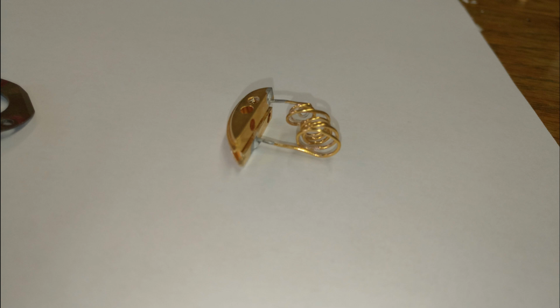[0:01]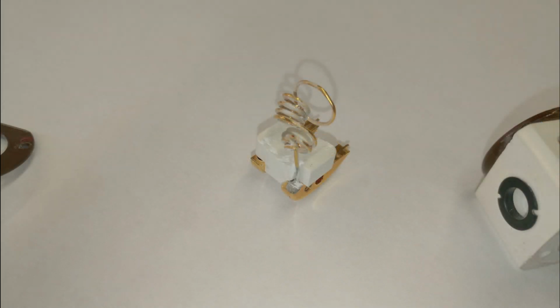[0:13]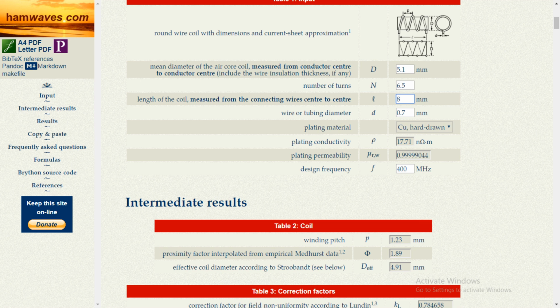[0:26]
The exploding rotor tangled the radio frequency solenoid coil. To make a new one, a lot of questions emerged. First, how the original looked like. Second, what wire was used in the original coil. Then, of course, I had to figure out how to make the new coil and how to solder it exactly in the rotor spinning axis.
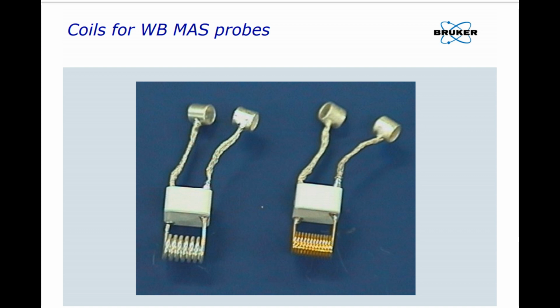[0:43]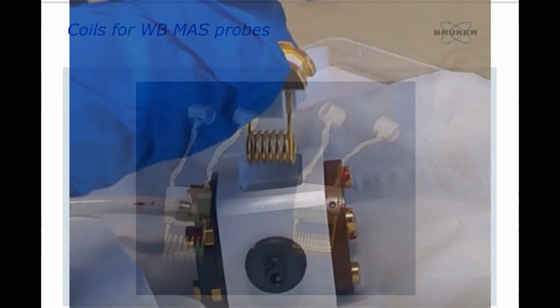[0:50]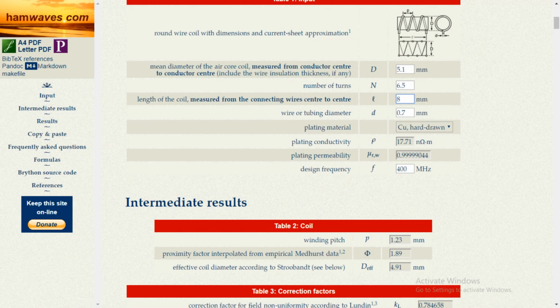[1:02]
The original coil is an LC inductor, and as such the inductance is determined by the coil shape. These include the coil diameter, the wire thickness, the space between windings, the coil length and the coil material. I could find pictures of the original coil in the Bruker solid system flyer. Another picture was available in a video on YouTube showing the stator and coil replacement of the exact same probe head. It has 6.5 windings and it is as long as the soldering tabs.
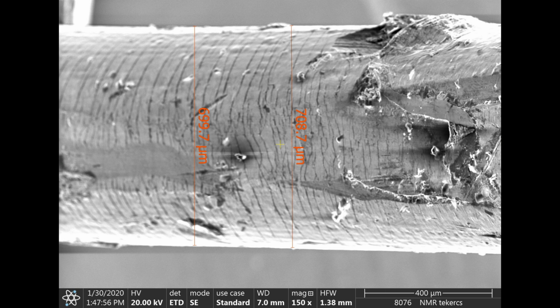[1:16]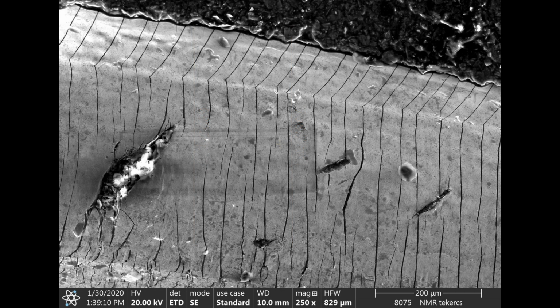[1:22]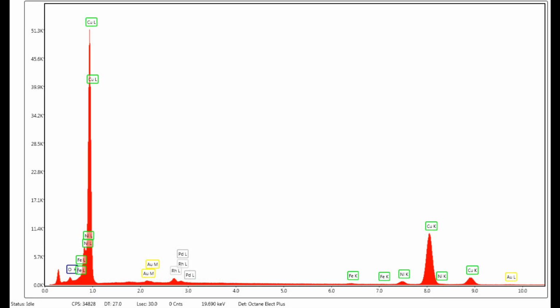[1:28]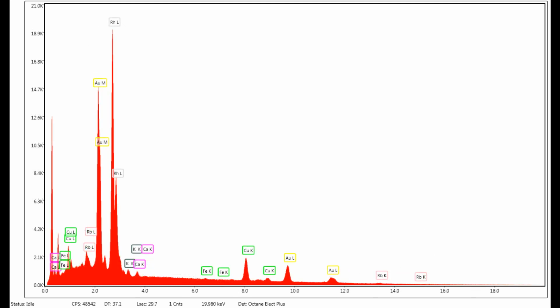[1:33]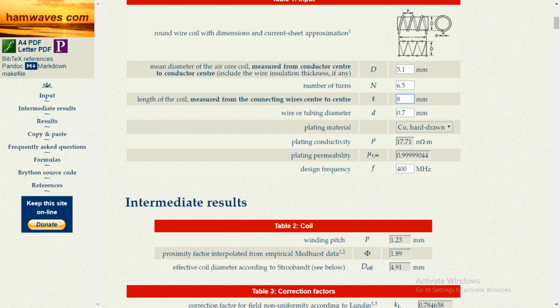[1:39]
The space between the rotor and coil internal should be minimal, but according to some papers, it is between 0.2 mm and 0.4 mm. The original coil thickness was 0.7 mm. Electron microscopic analysis showed that the coil is pure copper with gold and rhodium coating. I am really grateful to Dr. Krzysztof Kovac from the Institute of Materials Engineering at our university for these measurements. With the acquired information, I was looking for a coil parameter calculator to determine the space between windings, which turned out to be 0.5 mm.
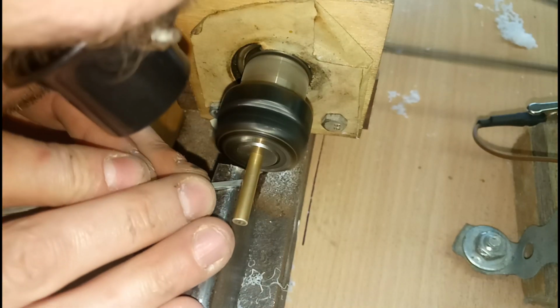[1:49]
A tool was made for the winding job. On my self-made lathe, the brass rod was turned down to 4.4 mm thickness.
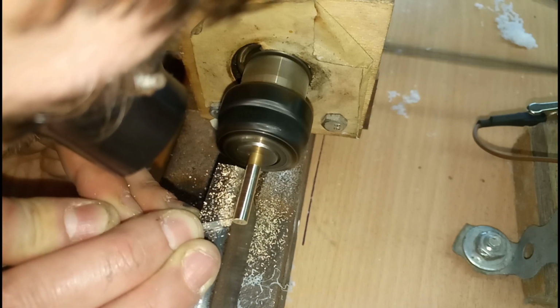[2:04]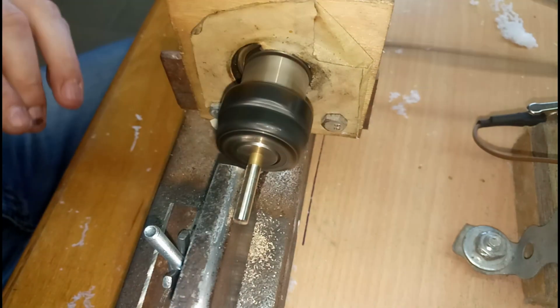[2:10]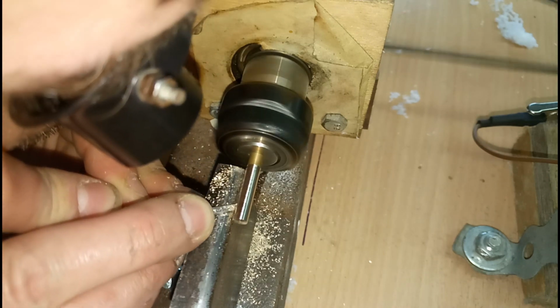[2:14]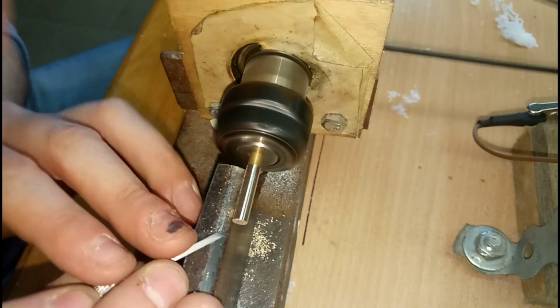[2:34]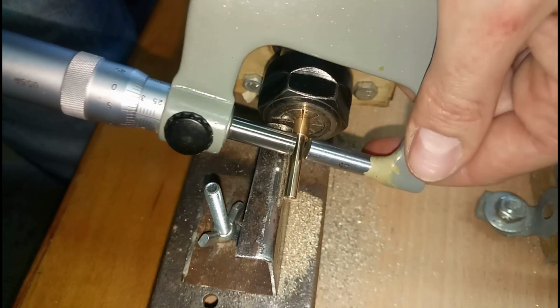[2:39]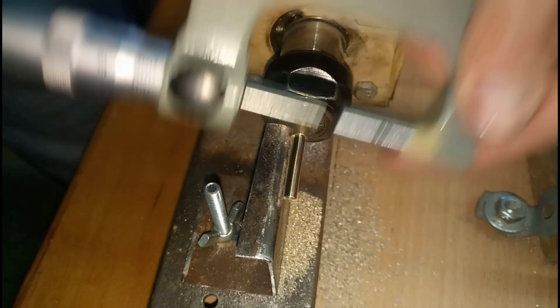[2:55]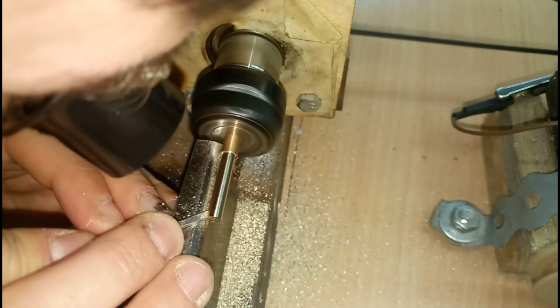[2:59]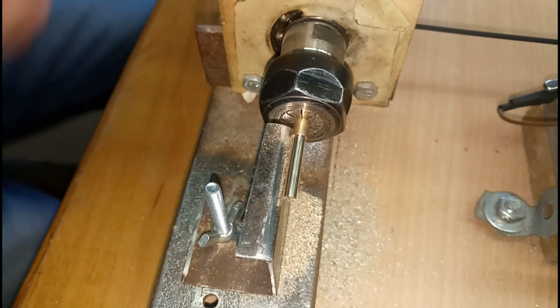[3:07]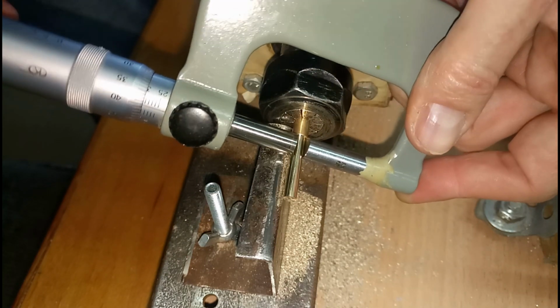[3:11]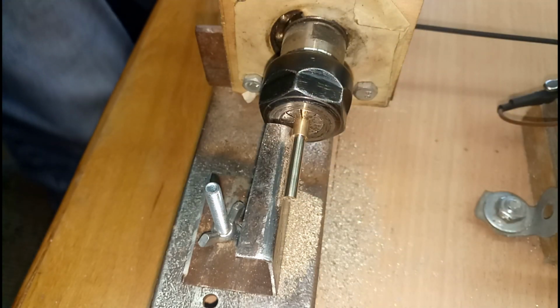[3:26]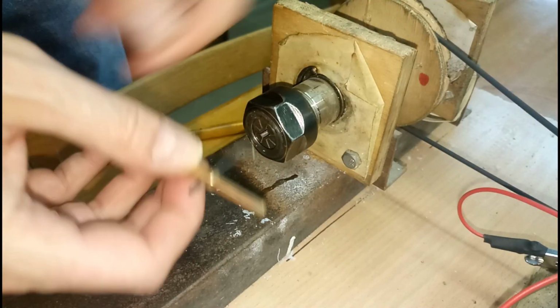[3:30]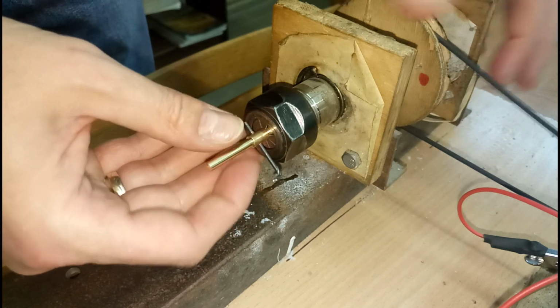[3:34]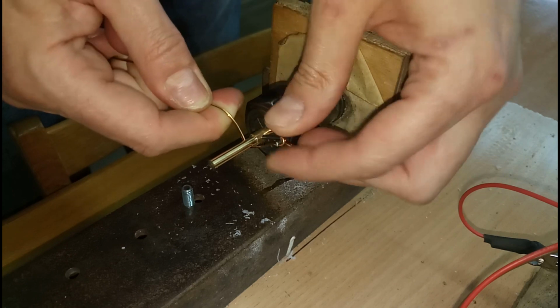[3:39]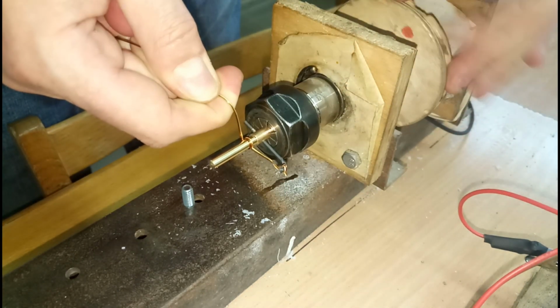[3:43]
A steel piece was inserted in the base, serving as a hook for the wires. Then I was just turning the tool in the lathe by hand while holding both wires. This way the thin wire made the desired 0.5 mm spacing.
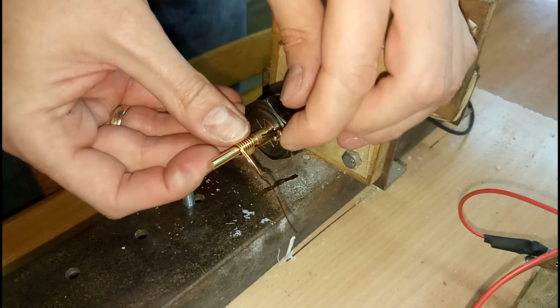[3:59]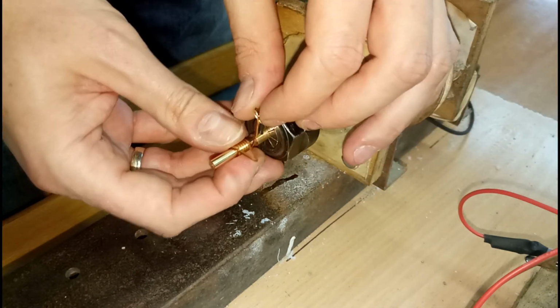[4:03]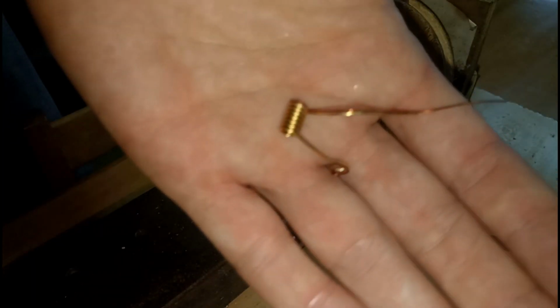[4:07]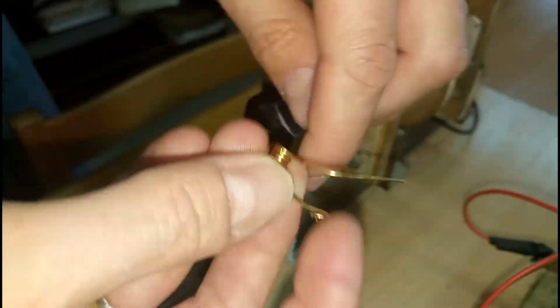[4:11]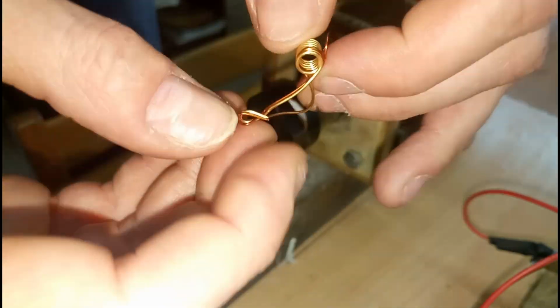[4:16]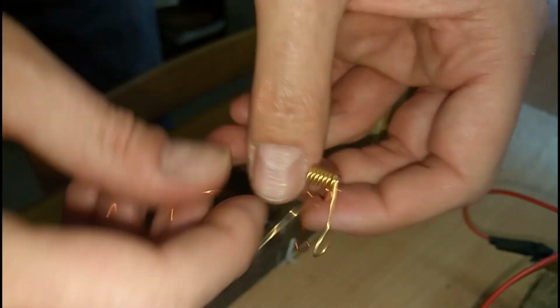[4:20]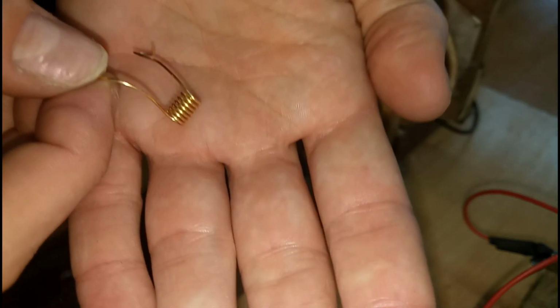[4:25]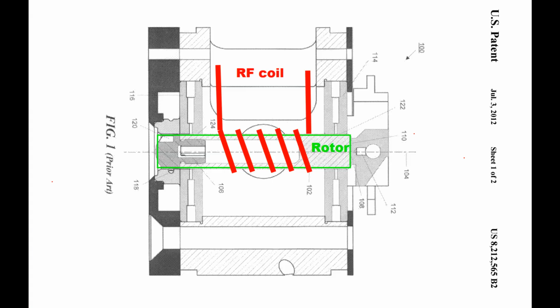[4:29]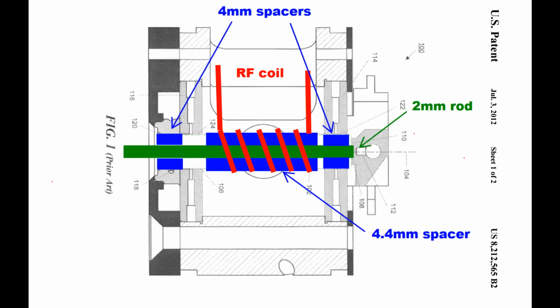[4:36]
This spacer wire was unwrapped from the gold-plated coil windings. The coil positioning was done by some spacers. Two 4 mm cylinders from polyoxymethylene and a 4.4 mm longer cylinder from Teflon were turned, both having a 2 mm hole in the middle.
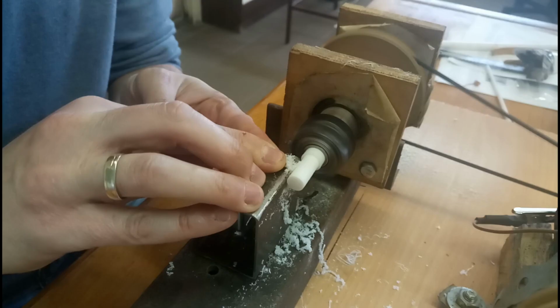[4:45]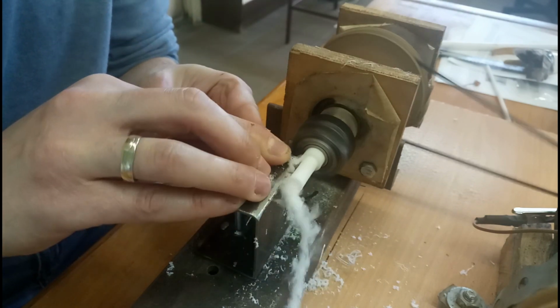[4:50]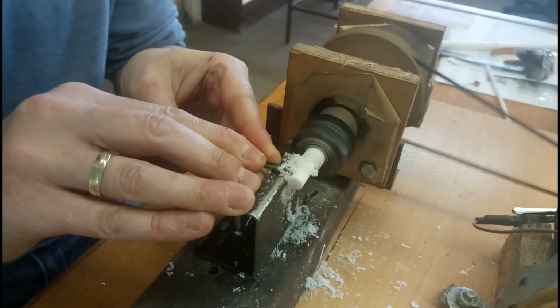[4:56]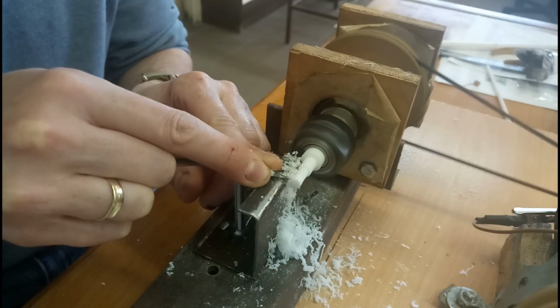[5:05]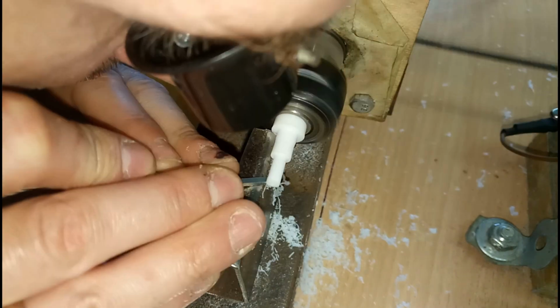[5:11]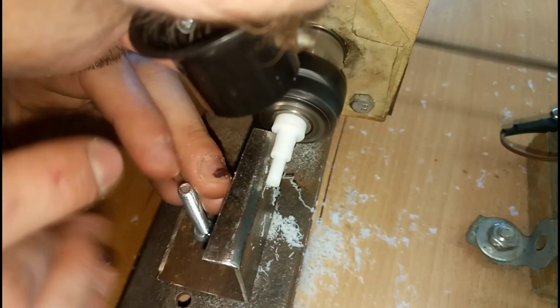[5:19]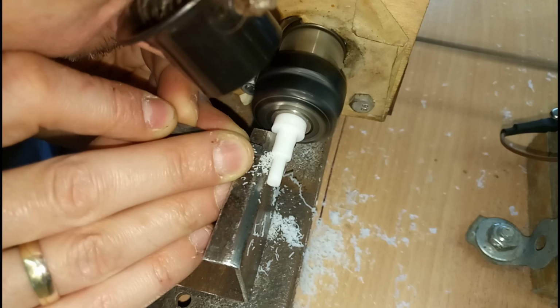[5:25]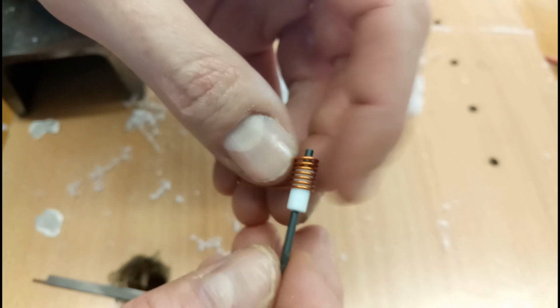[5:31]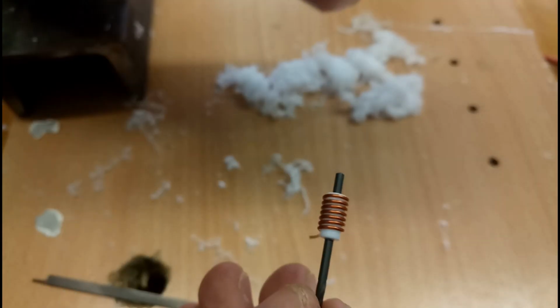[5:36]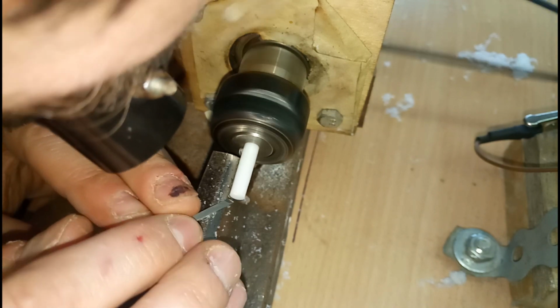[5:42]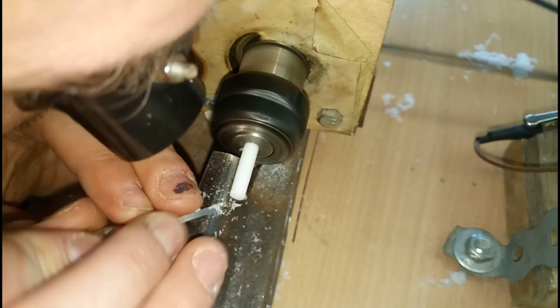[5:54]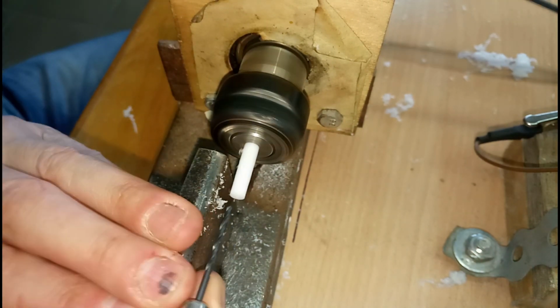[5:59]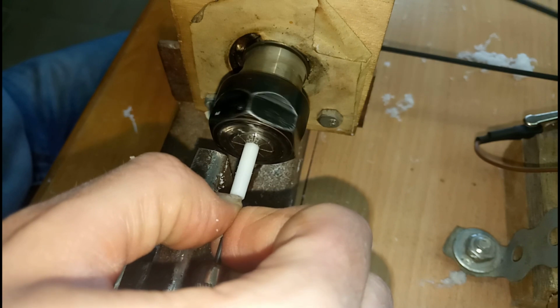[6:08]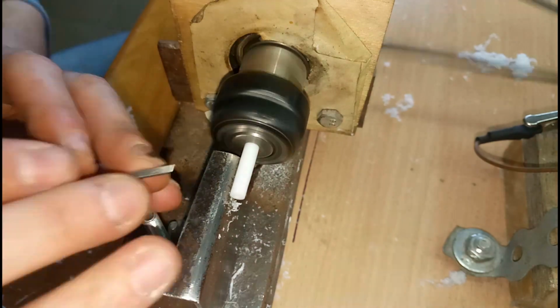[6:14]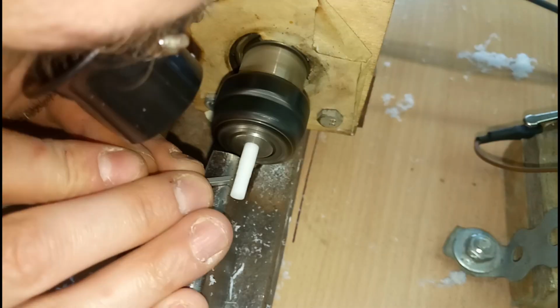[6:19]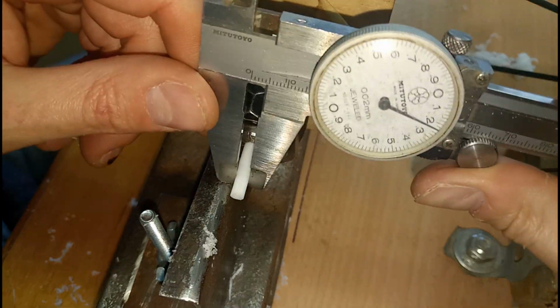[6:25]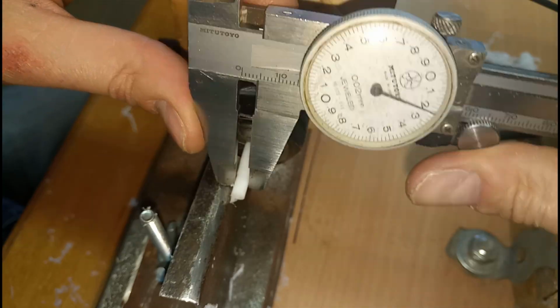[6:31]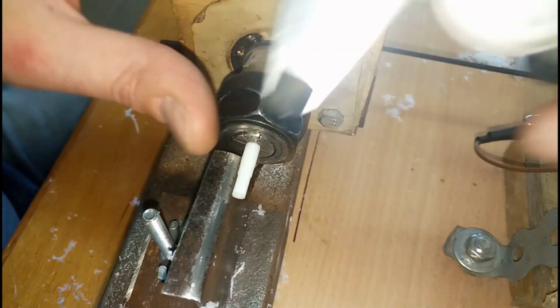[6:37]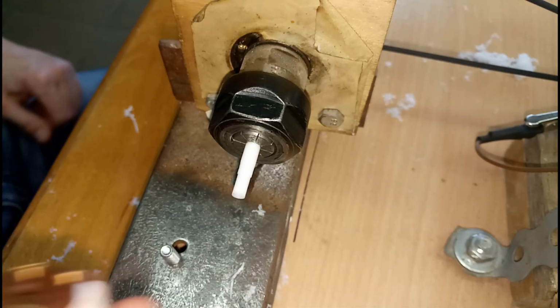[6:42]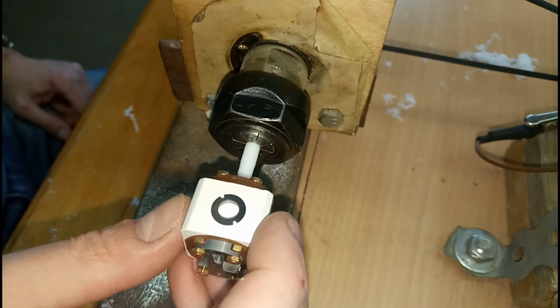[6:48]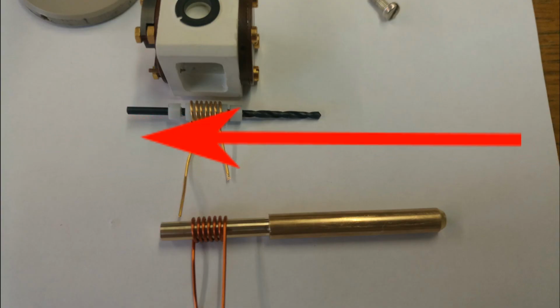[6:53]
The two smaller spacers go into the bearings. The 4.4 mm spacer goes in the coil. Then a 2 mm drill rod was inserted carefully through the three spacers. This made sure that the coil is evenly spaced around the rotor axis.
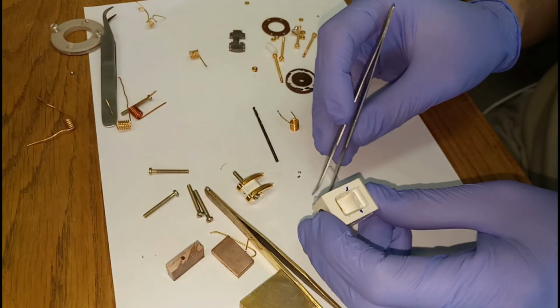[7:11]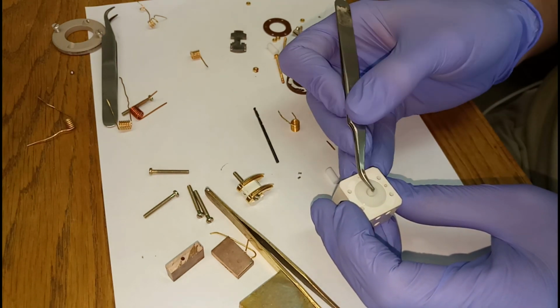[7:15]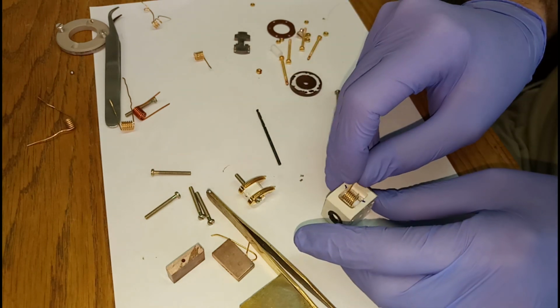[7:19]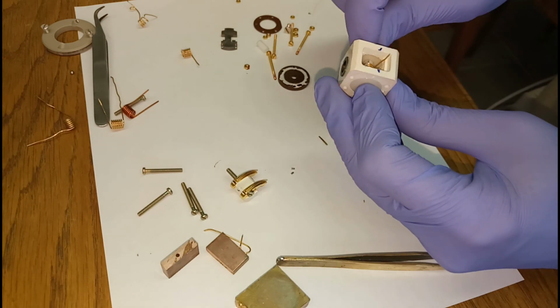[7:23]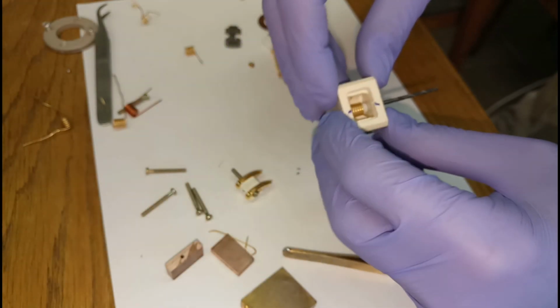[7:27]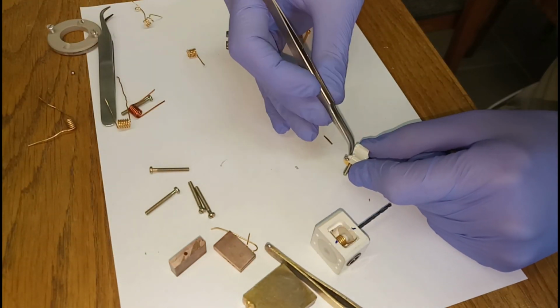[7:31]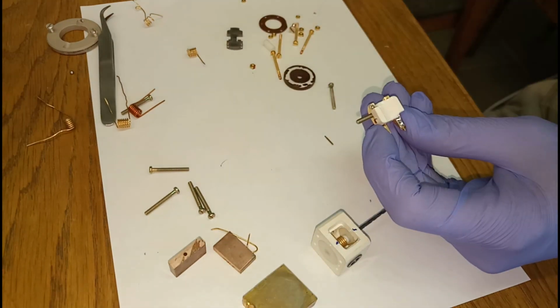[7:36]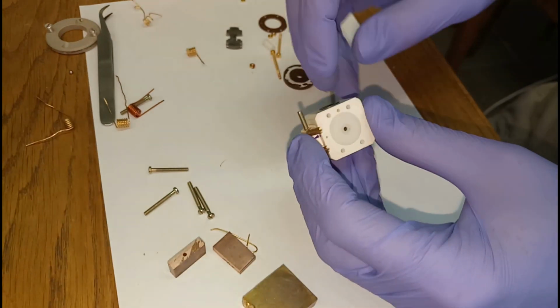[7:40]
The coil ends were bent to the soldering positions and were cut to length. Small pieces of solder were added to both soldering holes. The original coil was soldered in 2 mm holes. Old solder was drilled from the contact tabs.
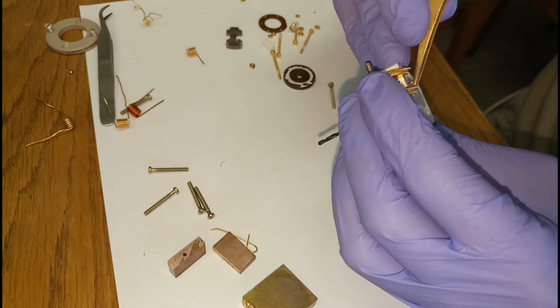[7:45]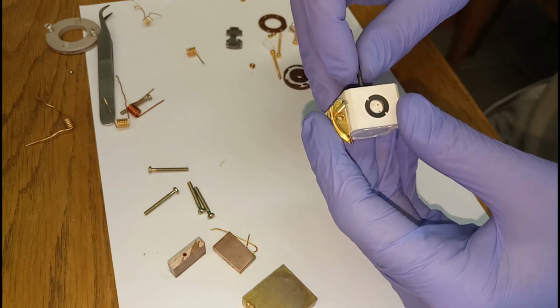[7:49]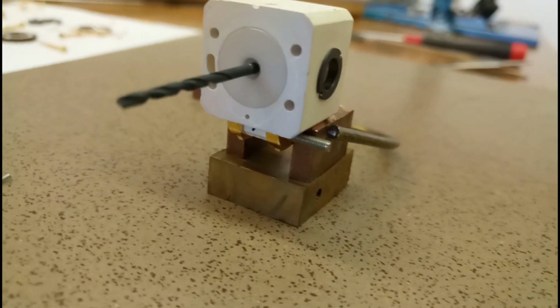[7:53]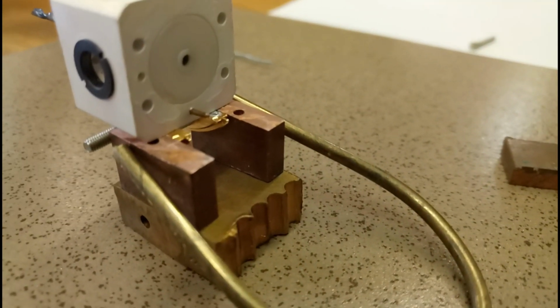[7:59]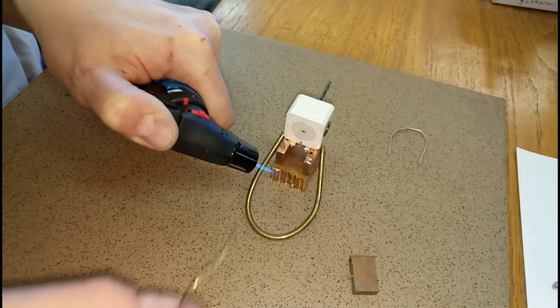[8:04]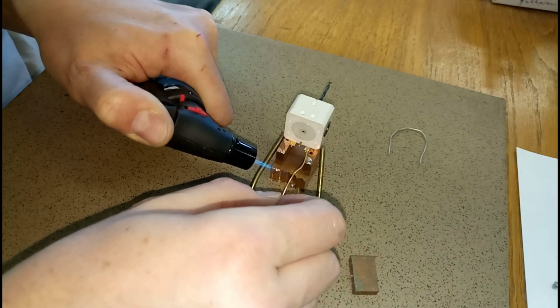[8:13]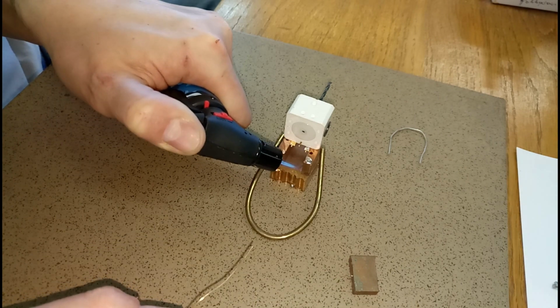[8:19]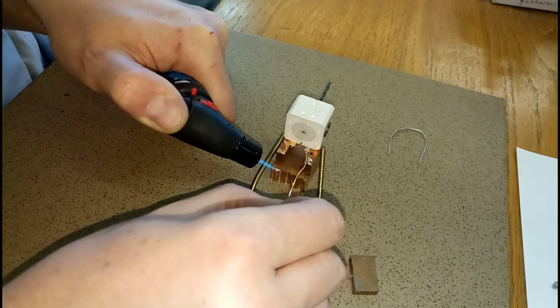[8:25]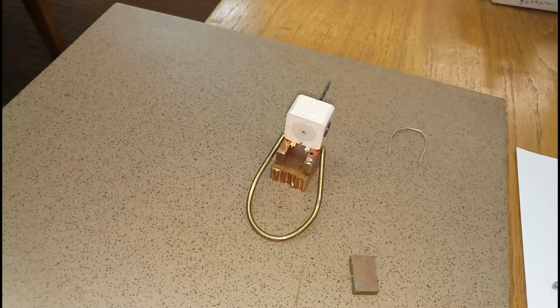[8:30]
The stator is a glass-like material, and as such it is very sensitive to temperature gradients, so I used a makeshift soldering stand from copper to transfer heat to the contact tabs. I was checking with a small piece of solder on the contact tab when the solder melts. Another indication is the color oxidation of copper, which begins at around 300 °C, the same as the solder melting point. Cooling was done again through the copper tabs.
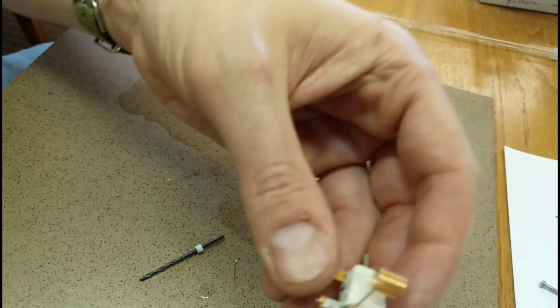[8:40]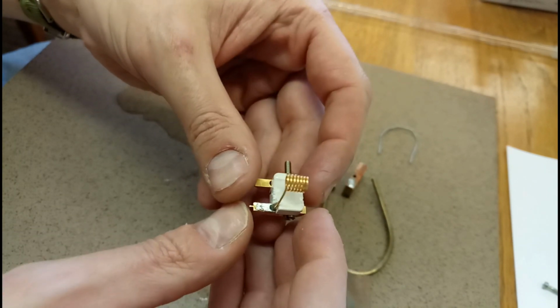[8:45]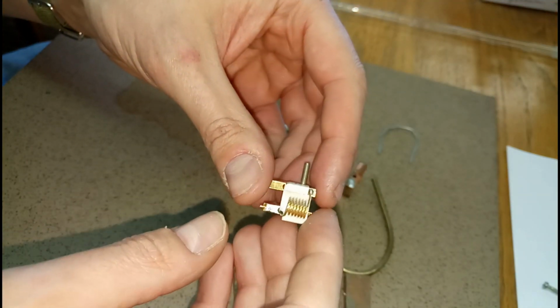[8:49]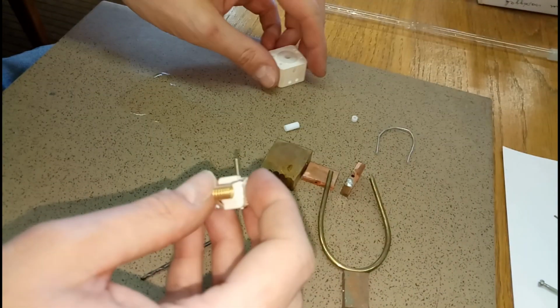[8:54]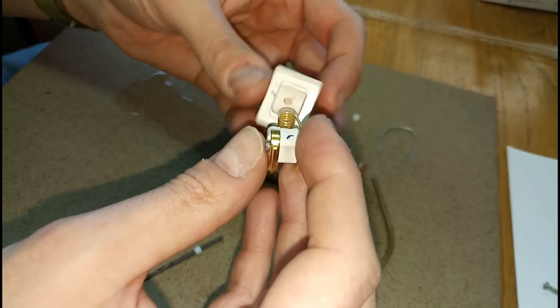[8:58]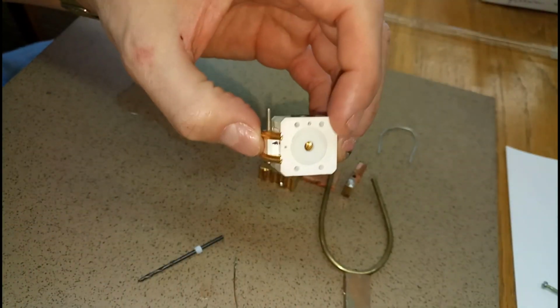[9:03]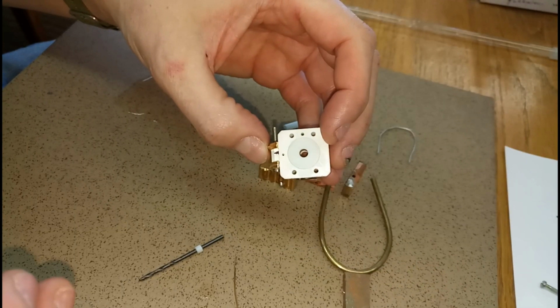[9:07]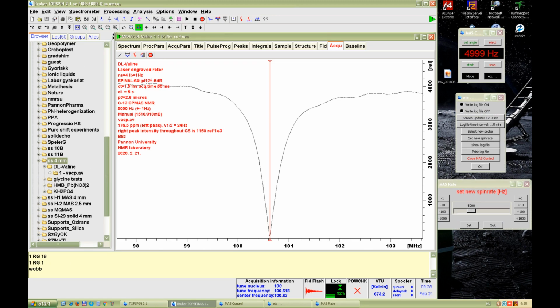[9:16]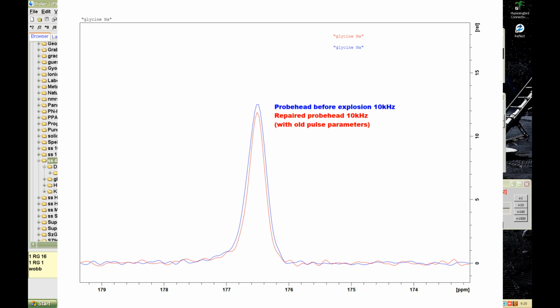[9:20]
This is a picture of a sample tuned for the proton frequency. And this one is tuned for the carbon-13 resonance. This is a comparison of carbon-13 spectra before and after the repair of a standard sample that was available.
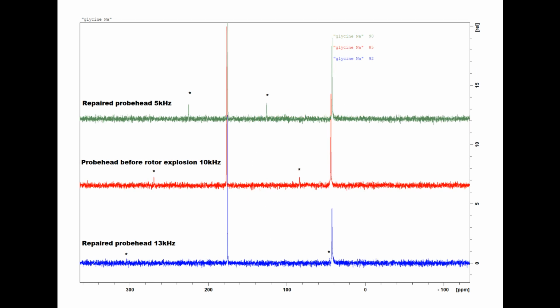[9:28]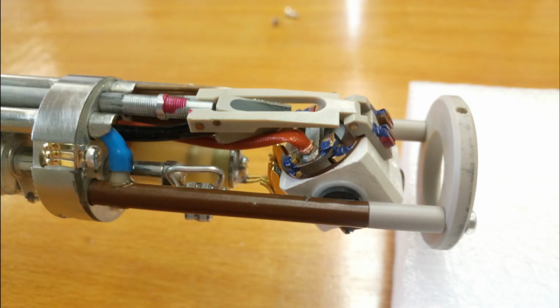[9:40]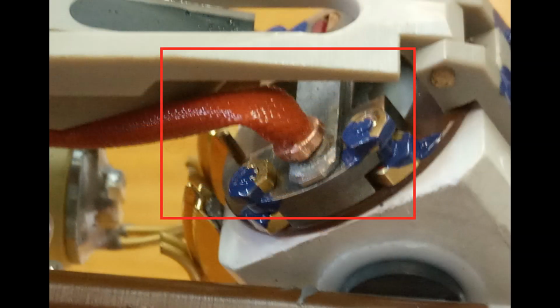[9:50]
Overall, the repair took 1 month and the material cost was about €50. The most expensive was the gilded copper wire, 20 quid for 14 meters from England. It is not shown in the video, but I had to buy 4 by 2.4 mm polyurethane air hose and varnish tube to repair the sample eject hose. It took 1 week to figure out the proper sizes of copper crimping rings to mount the varnish tube.